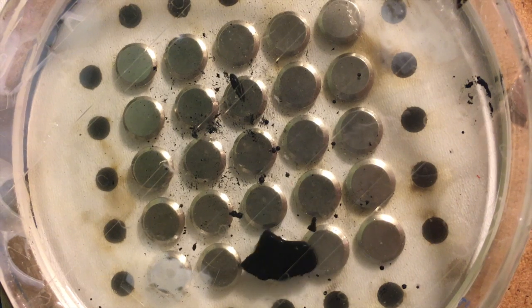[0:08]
Hello YouTube, my name is Lucas, and today I'll be showing you how to make an amazing display effect using a combination of ferrofluids and electromagnets.
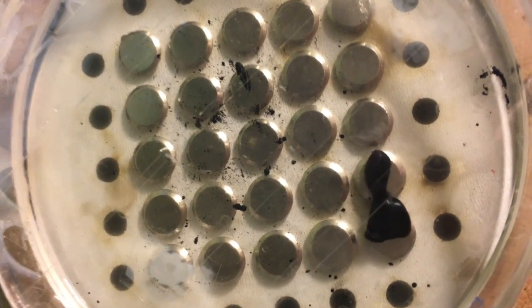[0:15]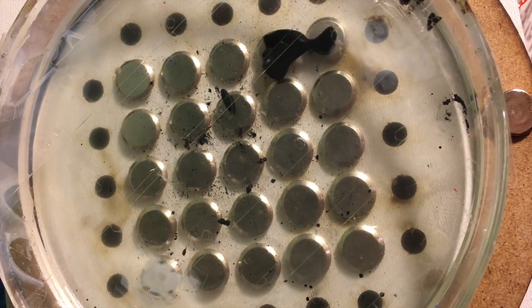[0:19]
Let's begin. My objective with this project was to create a platform that's very cheap and accessible to biohackers and makers so that they can start playing around with fluids and chemistry protocols.
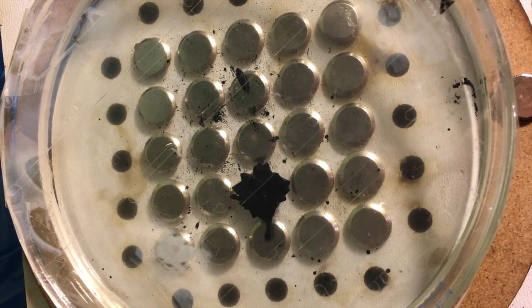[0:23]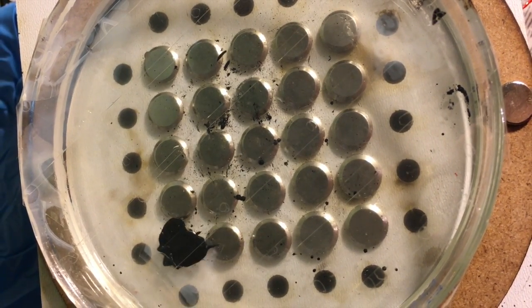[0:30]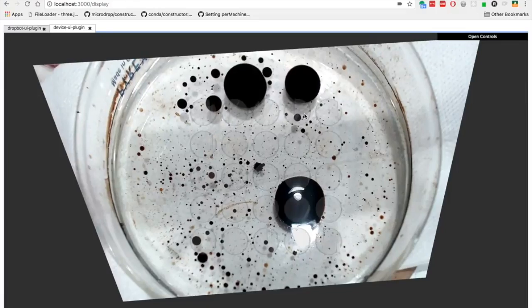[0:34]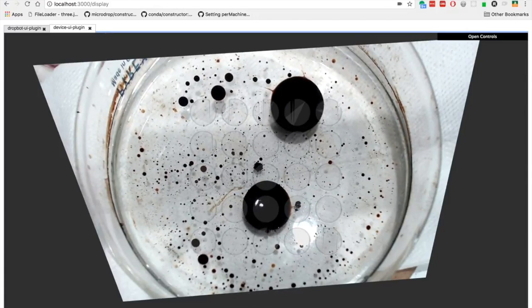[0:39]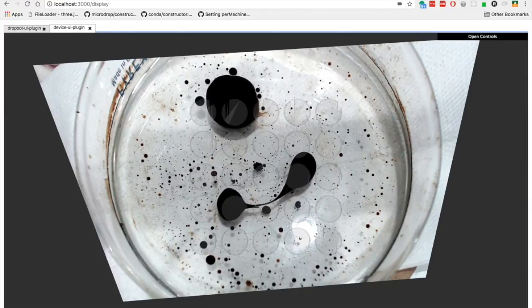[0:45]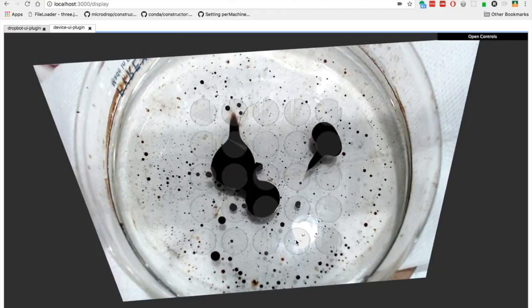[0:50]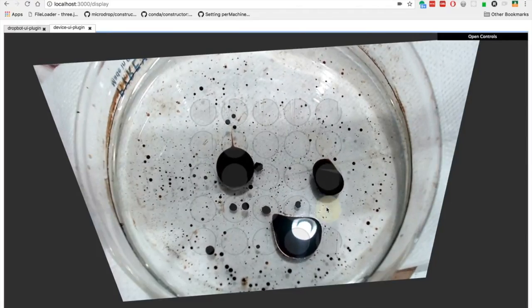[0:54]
If you're familiar with microfluidics and digital microfluidics, discreetly moving fluid like this has a lot of advantages, but right now current chips often have very short lifetimes and are very expensive, often requiring clean room access. With electromagnets and ferrofluids, you can accomplish very similar things using hardware that is less than $50, and you could probably even make this cheaper. So I hope that this will give you an introduction and get you excited about the potentials of digital microfluidics
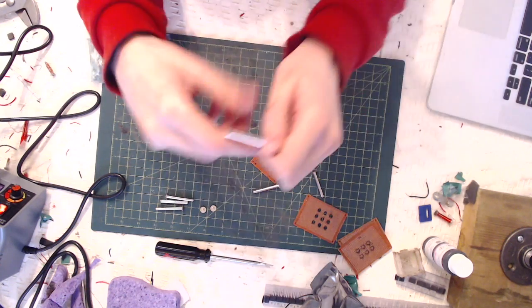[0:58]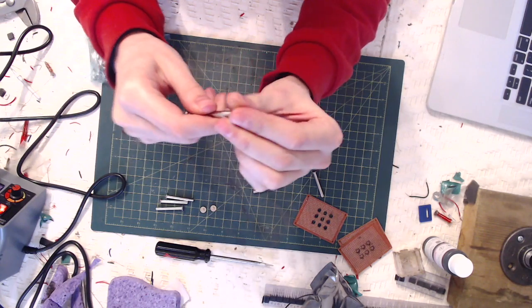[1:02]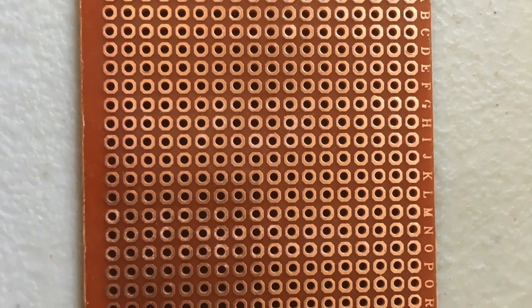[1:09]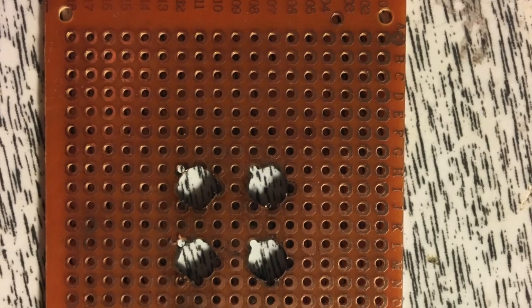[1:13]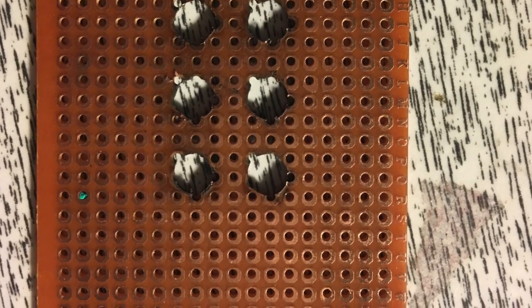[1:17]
and ferrofluids in general. For making the electromagnets, I recommend Chicago screws. They're great for holding the magnet wire in place and mounting onto a PCB, as I've done here. So this is the PCB I used. I laser cut 6 holes right in the center that match the diameter of my Chicago screws so that I could directly mount my electromagnets to my circuit board.
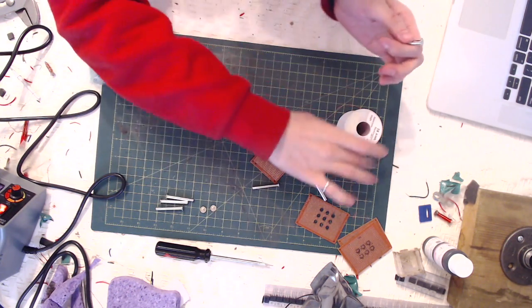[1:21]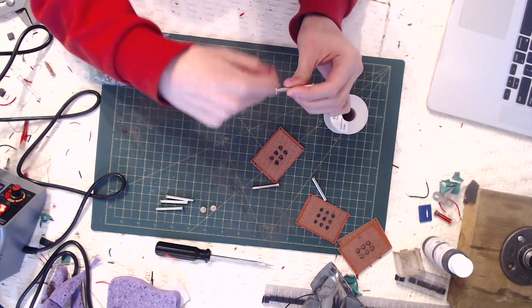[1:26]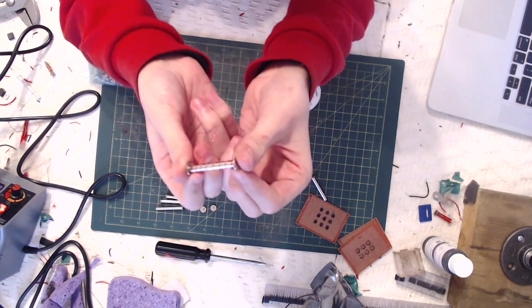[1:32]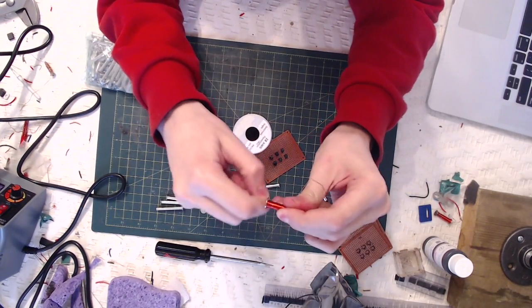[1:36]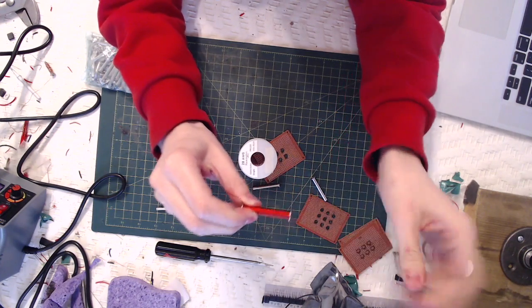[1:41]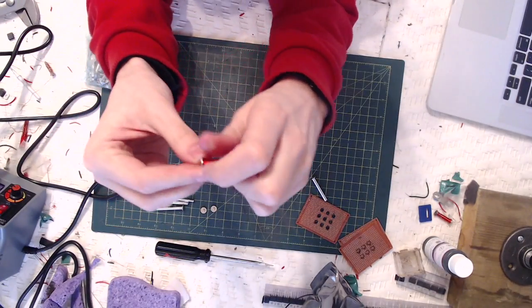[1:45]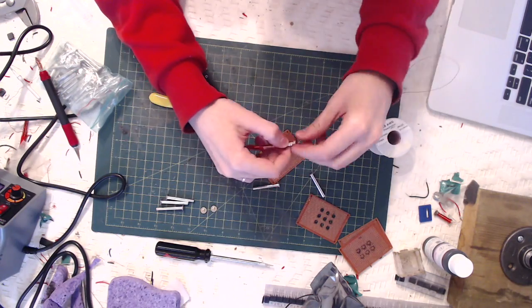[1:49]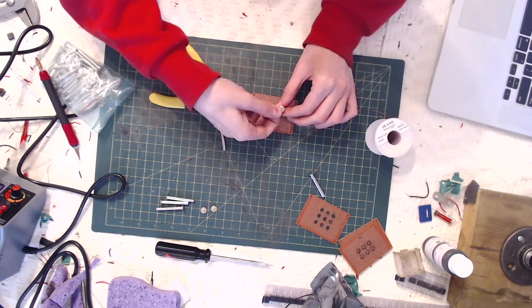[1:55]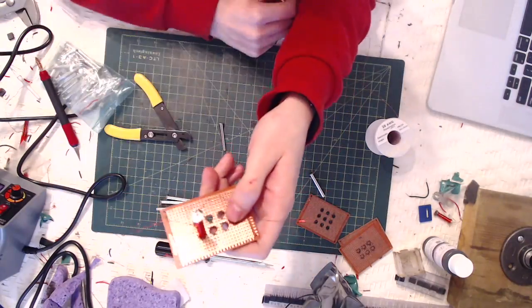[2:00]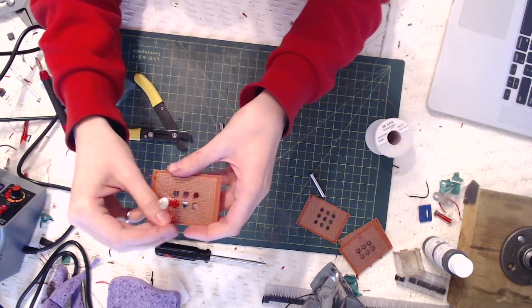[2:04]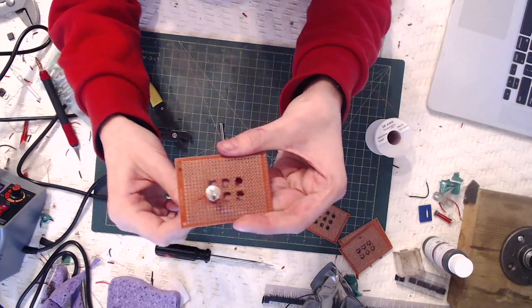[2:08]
Next, attach the electromagnet to the PCB by removing the coil, placing the head through the PCB, and then reattaching the coil in the top of the copper screw. Now place the magnet wire through the PCB in a row and column based way. Leave space also along the edges because we will be adding a Schottky diode to every individual electromagnet.
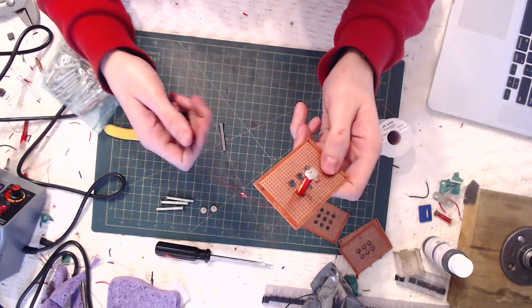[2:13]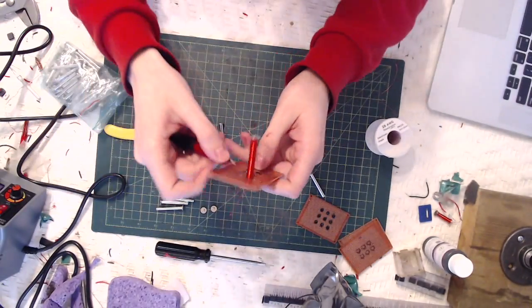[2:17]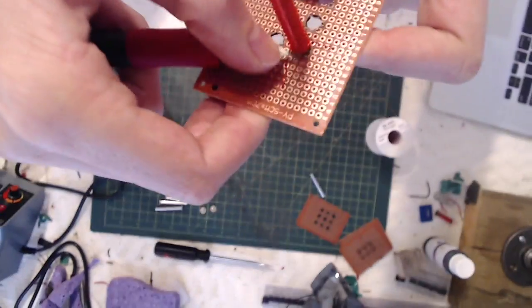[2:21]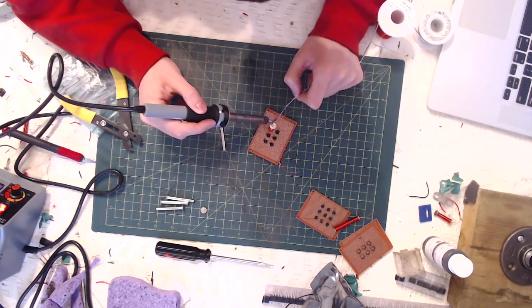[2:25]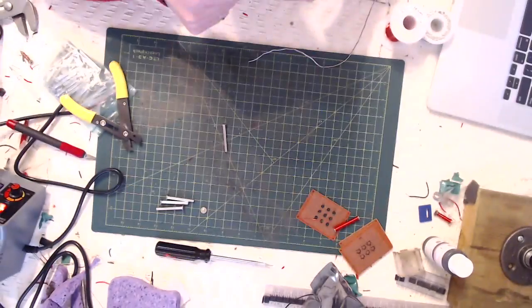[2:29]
The magnet wire is surrounded by an insulative layer that we need to get rid of before we can solder. To do this, I use the back edge of a razor blade. I found the front edge was a little too sharp and would accidentally cut the wire. Finally, solder the shaved magnet wire on the side facing the electromagnet.
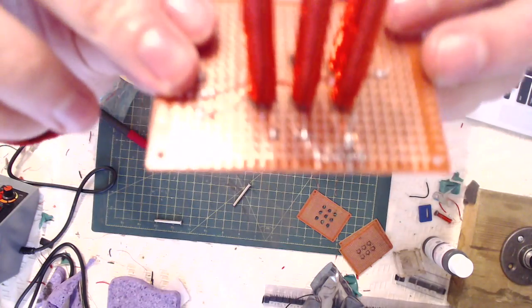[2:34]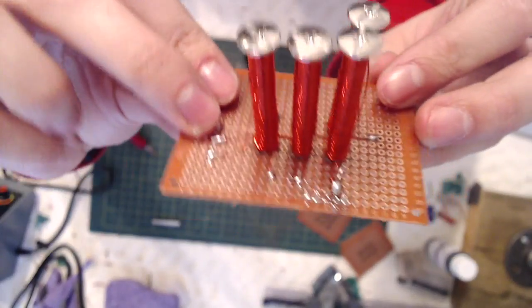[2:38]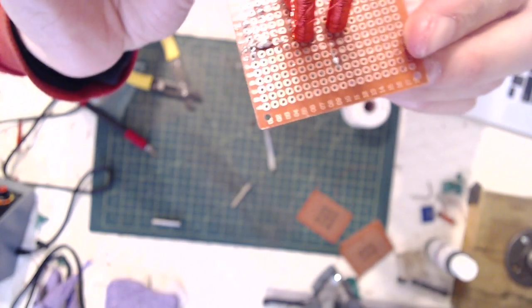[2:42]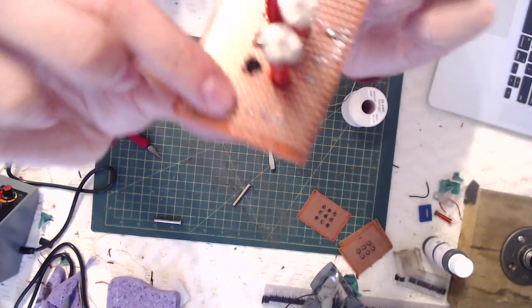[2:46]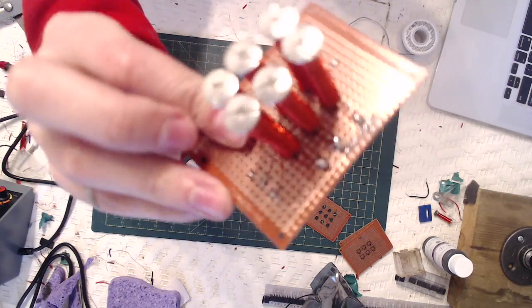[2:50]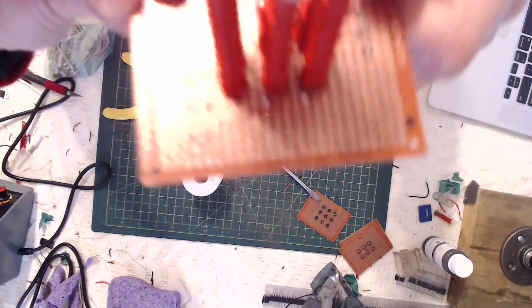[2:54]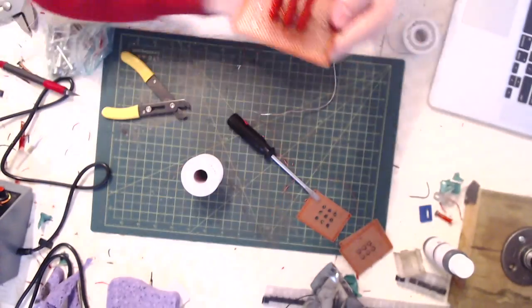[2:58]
Now I skipped ahead to once I've done 6 different electromagnets so you can see how I'm soldering them. I'm soldering each individual row together, but leaving the columns separate, and that's because I'm going to add a Schottky diode across each column to avoid backwards current. I skipped ahead again after I finished all 6, so you can see each row is soldered together, and all the columns are left separate.
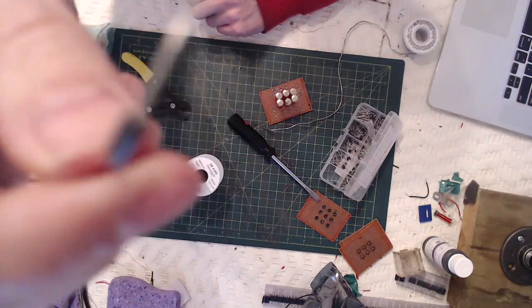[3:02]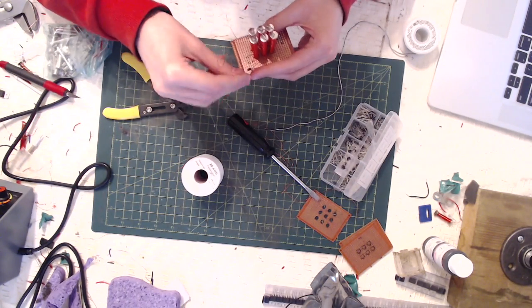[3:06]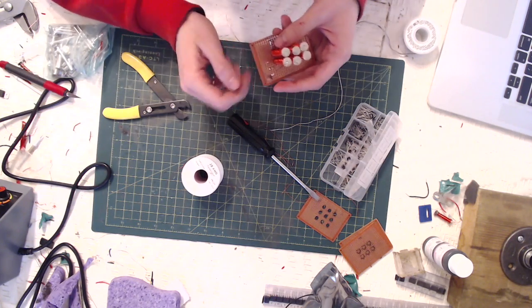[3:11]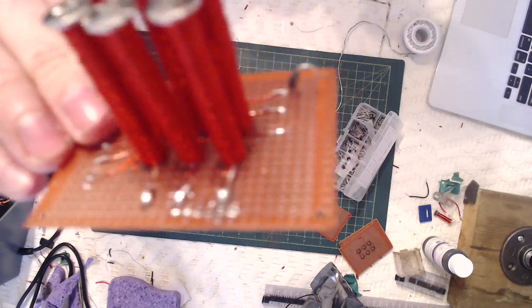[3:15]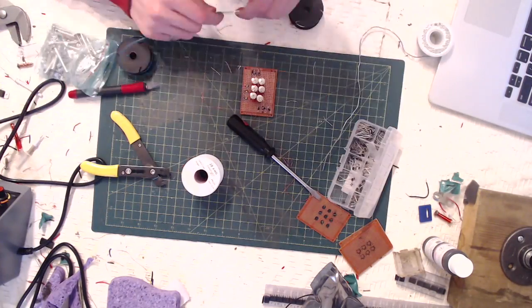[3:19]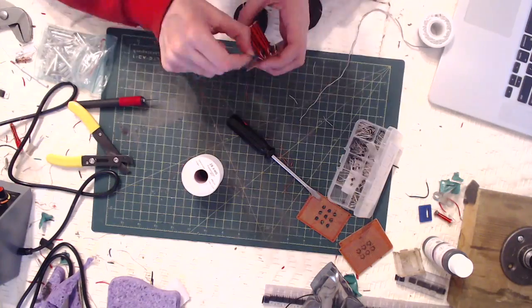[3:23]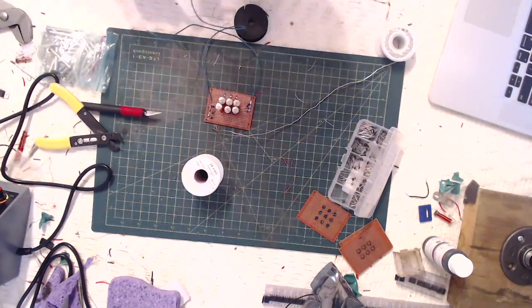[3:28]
Now solder a Schottky diode to each individual wire that we're going to be attaching the columns to. I'm using 1N5819. It needs to be 1 amp rated, and the reason we're using a Schottky diode is we want to have as little voltage drop as possible in order to maximize the amount of current we can draw. Once all the Schottky diodes are in place, solder the ground ends together because we're going to treat it as one giant column. Like I said, we're going to be addressing this in a row column based matrix.
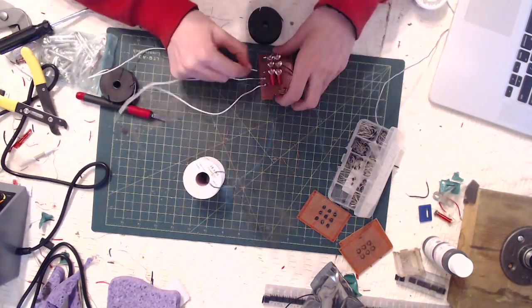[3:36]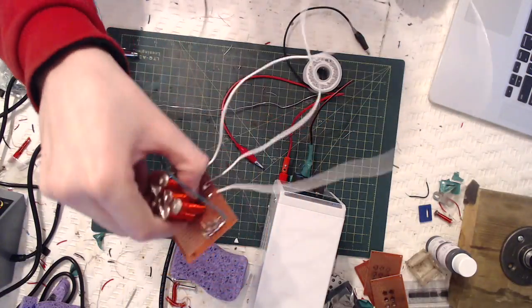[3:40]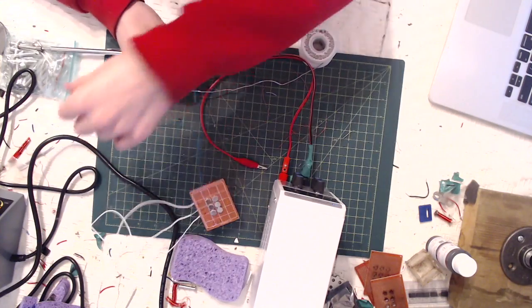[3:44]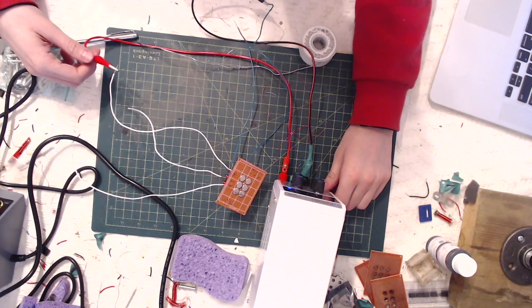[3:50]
Finally, solder ground and high voltage leads to the different rows and columns. Once your circuit is complete, you should have something that looks like this. Attach it to a power supply. Make sure that you have a constant current limit of around 1 amp because this will just go to infinity depending on what your max voltage is.
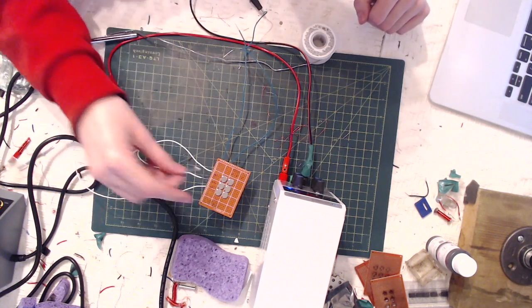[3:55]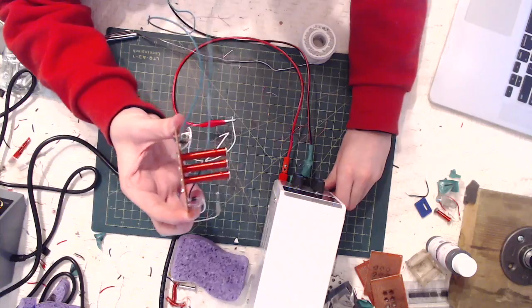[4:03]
Let's give her a test run. I've connected row 1, column 2, and when the electromagnet is on this position, it sticks, and as soon as I turn the power supply off, it turns off.
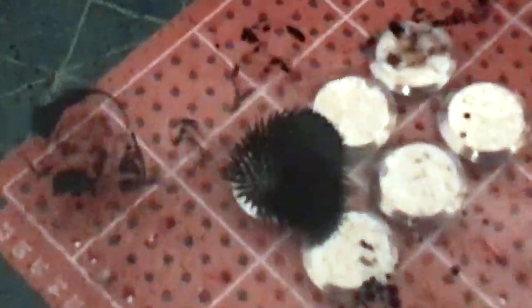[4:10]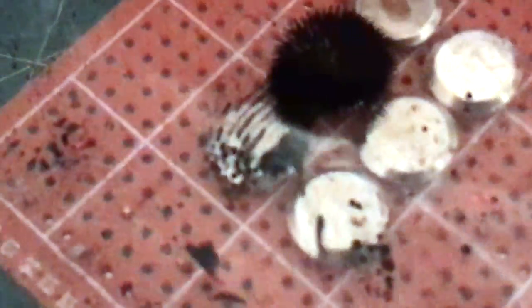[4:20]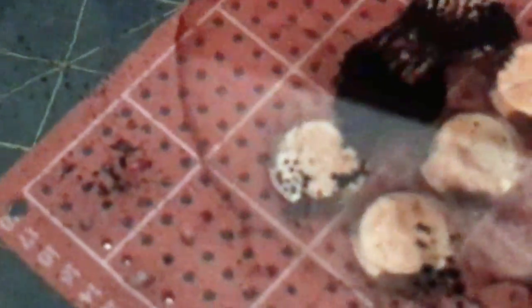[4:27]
Now I put ferrofluid and suspended it in 3/4 soapy water, 1/4 rubbing alcohol. Too much soapy water and you see this film form at the top. Too much isopropanol and you'll see it starting to stain. So here's a good mixture. Probably could add a little more water so that it stains a little less, but it's getting some pretty nice peaks.
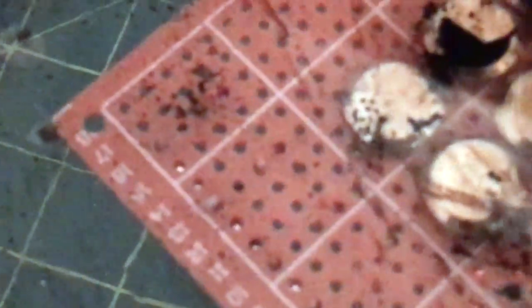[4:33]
This is all running with constant current of 1 amp, and the voltage is ranging from 2 to 3 volts depending on the electromagnet. Alright, so that concludes today's video.
In the next one, I will show you how to make the rest of the circuit so you can digitally control them to make some really cool effects, and show you some software that you can use to help with that.